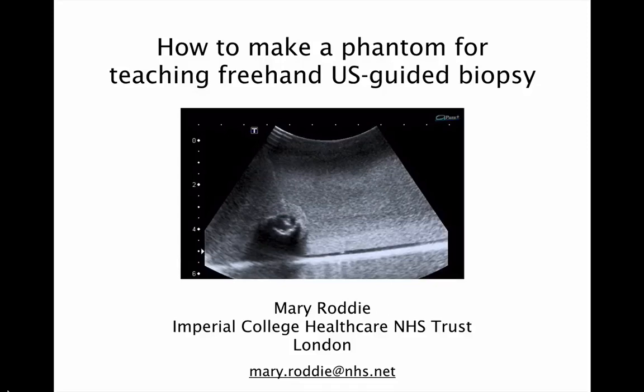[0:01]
Hello, my name is Mary Roddie and I want to share with you a great recipe for making a homemade phantom that you can use either for practicing or teaching freehand ultrasound guided biopsy.
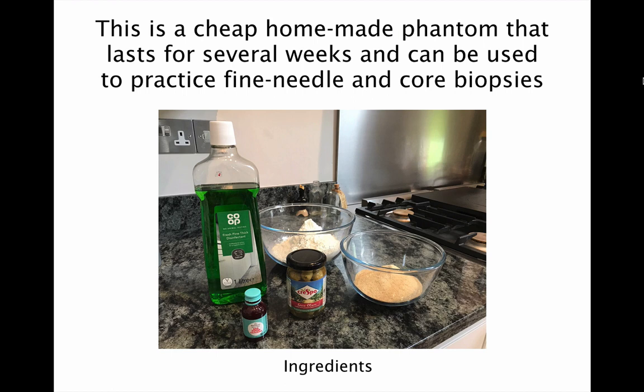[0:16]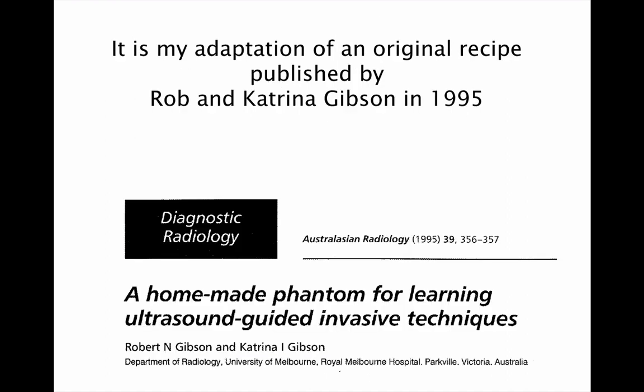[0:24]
The great thing about this phantom is it's really cheap to make and you'll find most of the ingredients within your kitchen cupboard. This recipe is an adaptation of an original published by Rob and Katrina Gibson in Australasian Radiology back in 1995. I have made a couple of adaptations to make the phantom a little bit more robust and also to last for a little bit longer.
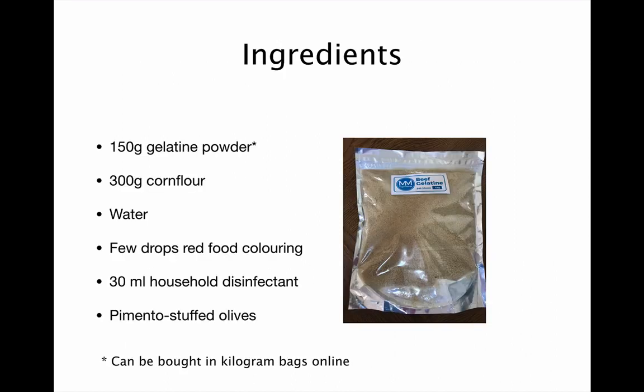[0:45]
Here's what you'll need to make the phantom. 150 grams of gelatin powder. I tend to buy this in kilogram bags online, but you can also get it in smaller sachets at supermarkets. You need 300 grams of corn flour, some water, a few drops of red food colouring, 30 mils of household disinfectant, and some pimento stuffed olives, which make the best targets for biopsy practice.
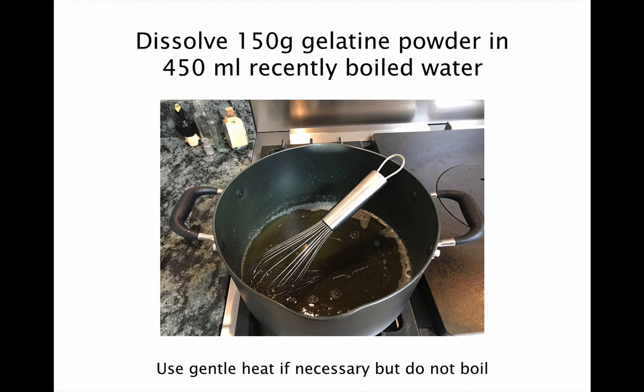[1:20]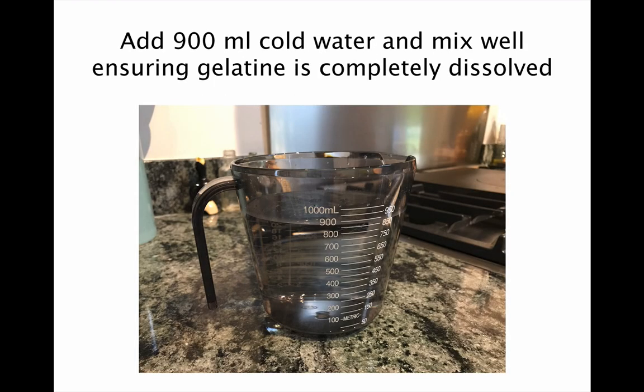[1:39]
So get out a large pan and dissolve 150 grams of gelatin powder in 450 mils of recently boiled water. You can use a gentle heat if you need, but make sure the mixture doesn't boil as this may destroy the setting effect of the gelatin. Then add 900 mils of cold water and mix well, making sure that the gelatin is completely dissolved.
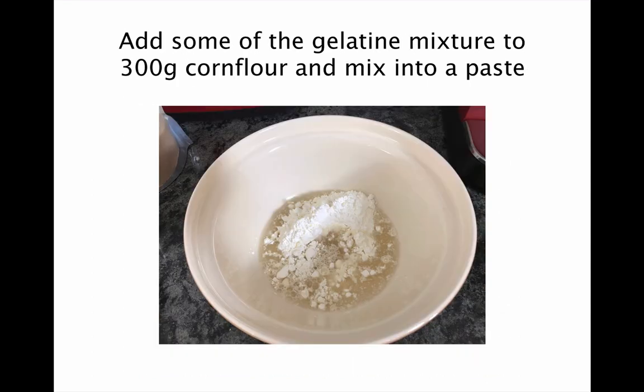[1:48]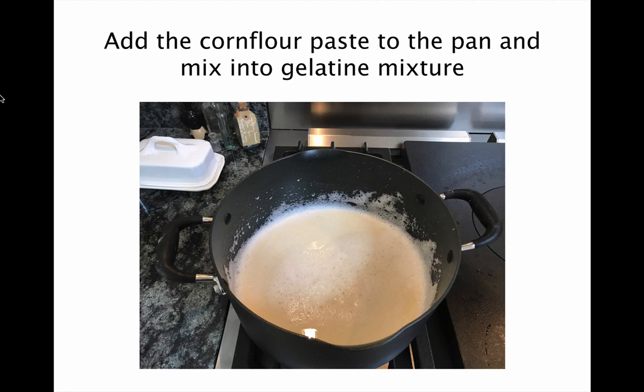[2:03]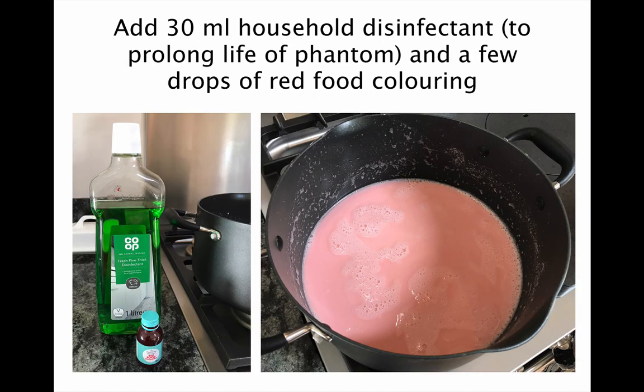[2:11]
Now, leaving the pan to one side, get out a large mixing bowl and add some of the gelatin mixture to 300 grams of corn flour and mix well into a smooth paste. Add the corn flour paste back into the pan and mix well into the gelatin mixture. At this point, you need to add 30 mils of household disinfectant, any type will do. This prolongs the life of the phantom, and then add a few drops of red food colouring as this will make the phantom more flesh coloured.
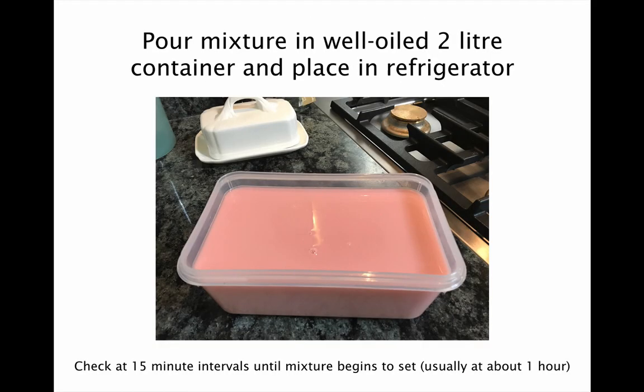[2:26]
Then pour the mixture into a well-oiled 2-litre plastic container and place in the refrigerator. Check it every 15 minutes until the mixture begins to set. This usually happens at about an hour.
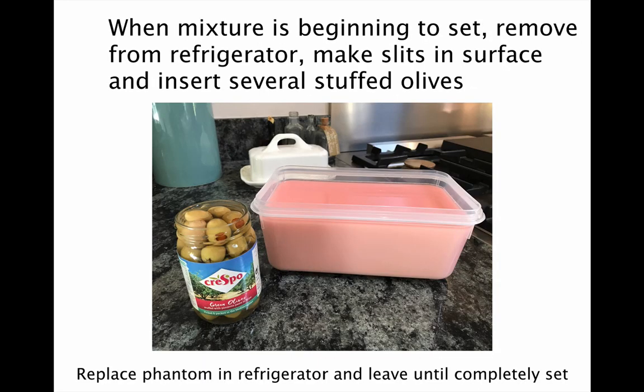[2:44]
When you feel the mixture is beginning to set, remove the box from the refrigerator and make several slits in the surface with a sharp knife, and through these you can insert several stuffed olives at different places into the phantom. You then put the phantom back into the refrigerator and leave it until completely set, which will take a few hours.
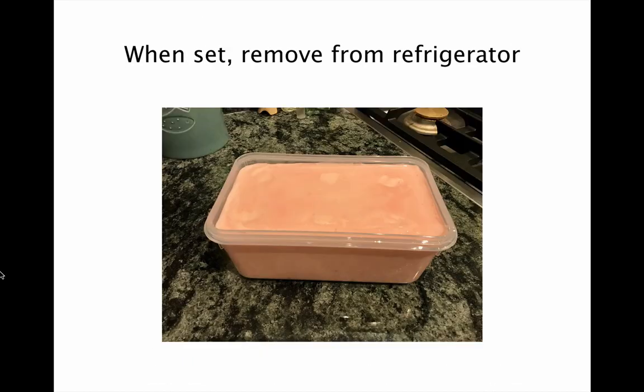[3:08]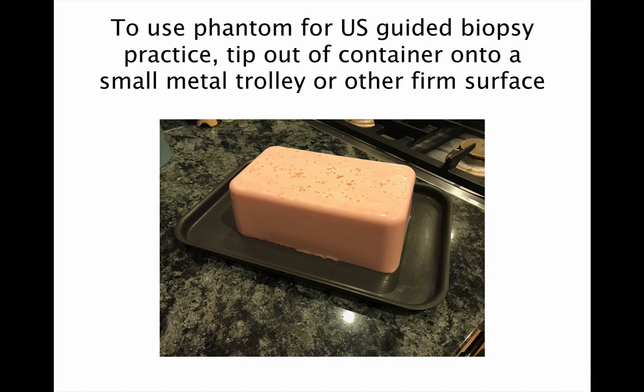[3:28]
When the phantom is set, remove it from the refrigerator. You may be able to see some subtle indentations on the surface where the olives have been inserted, but this isn't important because when you're using the phantom, that will form the base and will not be visible to the operator. To use the phantom for ultrasound guided biopsy practice, tip it out of the container onto a small metal trolley or other firm surface.
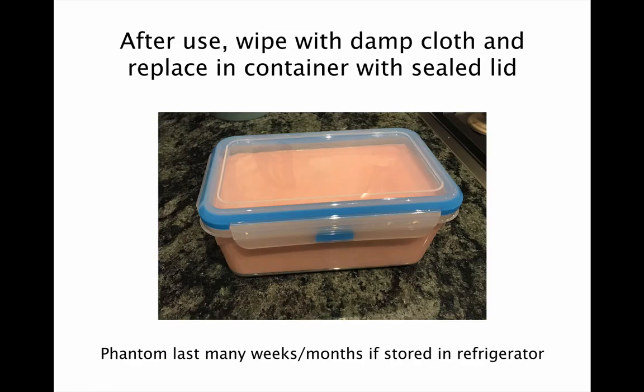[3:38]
After you've finished using the phantom, make sure it's wiped with a damp cloth and then replace it in the container with a sealed lid. If you look after it, it will last for many weeks or even months if stored in a refrigerator.
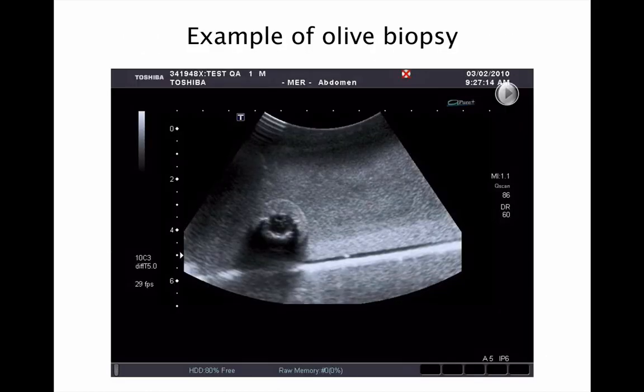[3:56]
So here's an example of one of the phantoms being used for biopsy practice. The corn flour and gelatin mixture mimics the texture of liver and the olives show up as very nice target lesions. You'll find that any tracks that appear during a practice session tend to disappear when the phantom is left back in the fridge to recover.
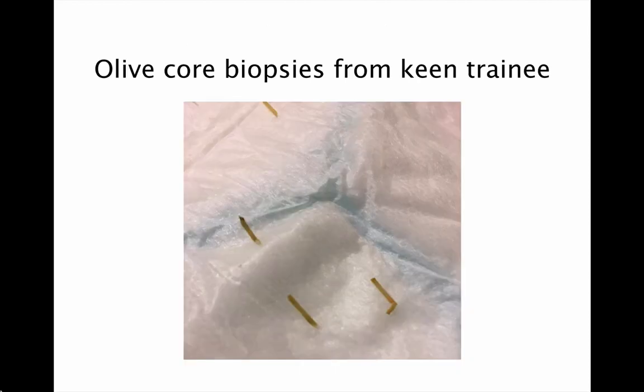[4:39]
It's also nice to be able to practice core biopsies as this is a relatively cheap phantom and this is not an option that's available on some of the more expensive commercial phantoms. And you can assess the quality of the core biopsies by looking for the little green olive cores. Here's an example of some good biopsies taken by one of our keen trainees.
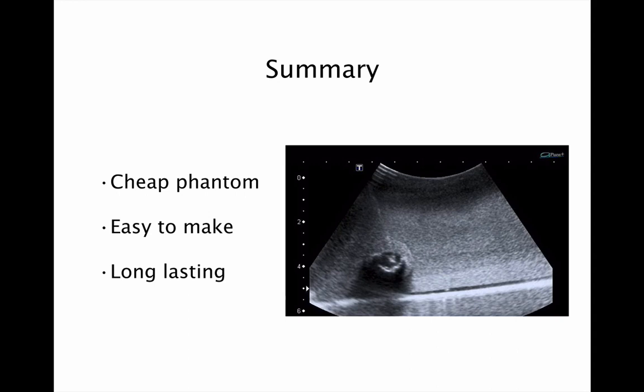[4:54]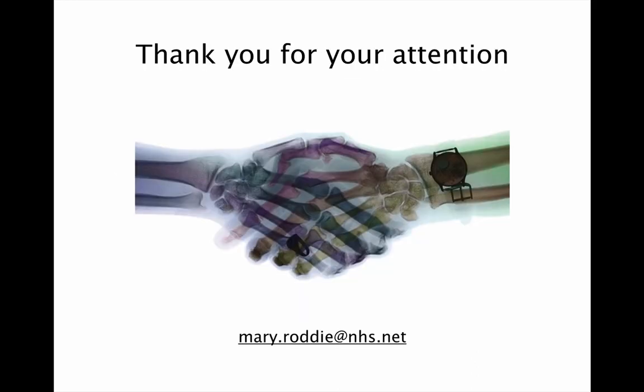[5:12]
So, in summary, I've shown you how to make a very cheap phantom out of kitchen ingredients. It's easy to make and it's long lasting, and it's a great way of practicing ultrasound guided biopsy or teaching it to trainees. I hope you found that useful.